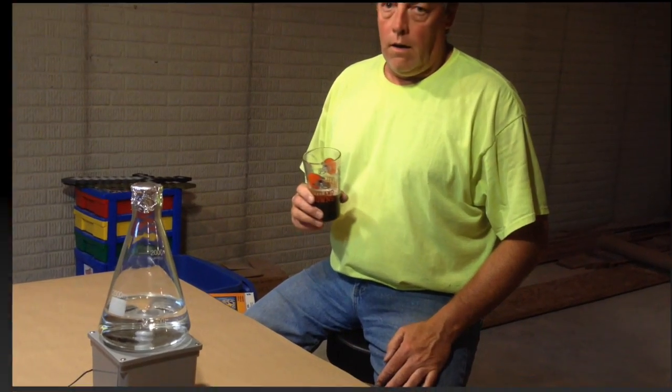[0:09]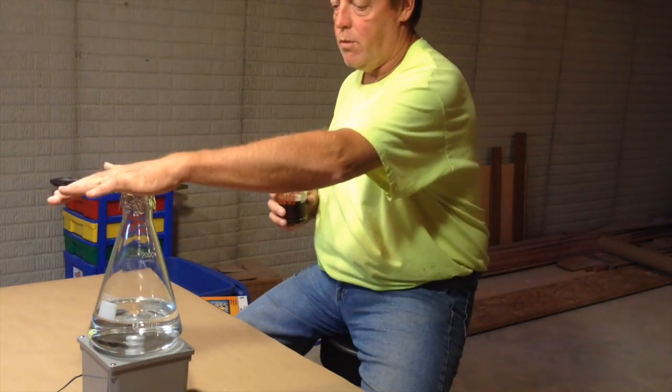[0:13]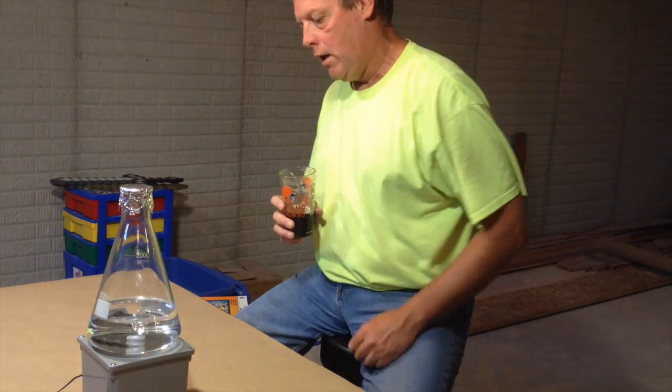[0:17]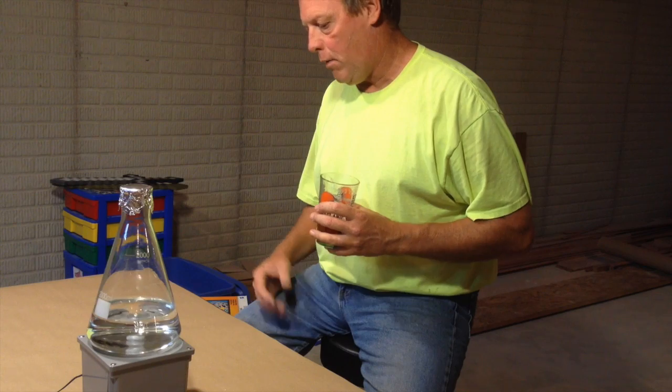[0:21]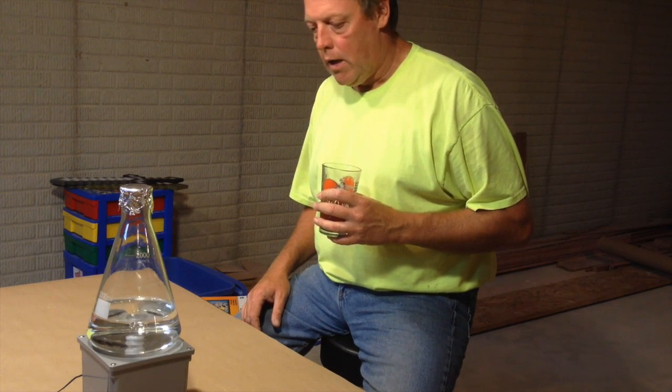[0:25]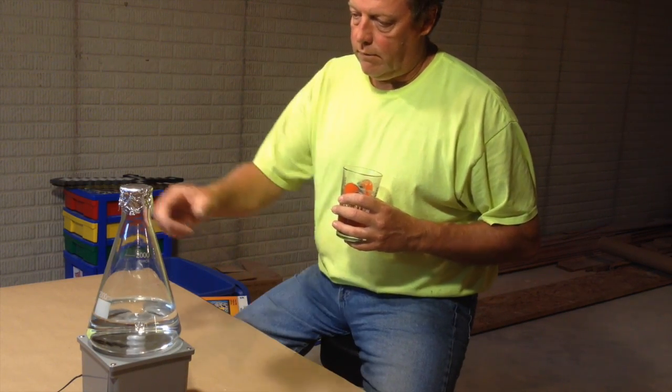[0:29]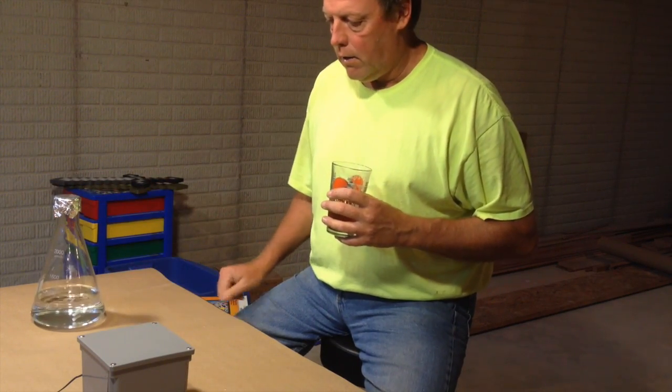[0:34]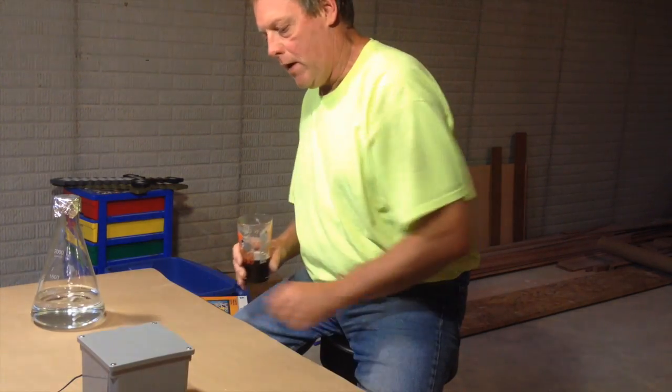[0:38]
Today we're making a stir plate. Took about an hour and a half to make. Parts weren't that expensive. Probably assembled the whole thing for about $20. I'll put a list of supplies down in the comments section, and it wasn't that bad to build.
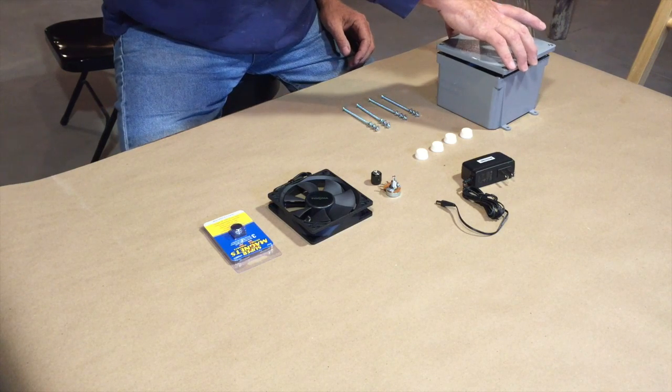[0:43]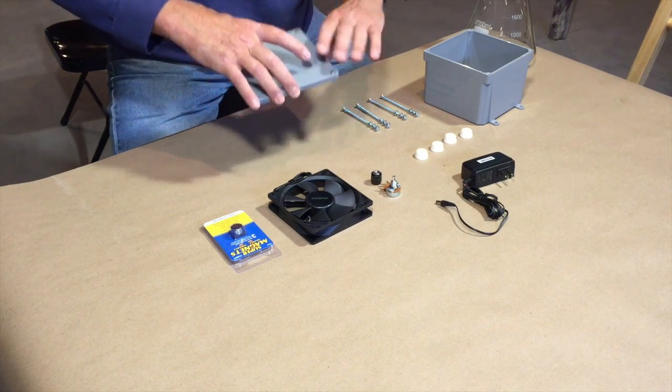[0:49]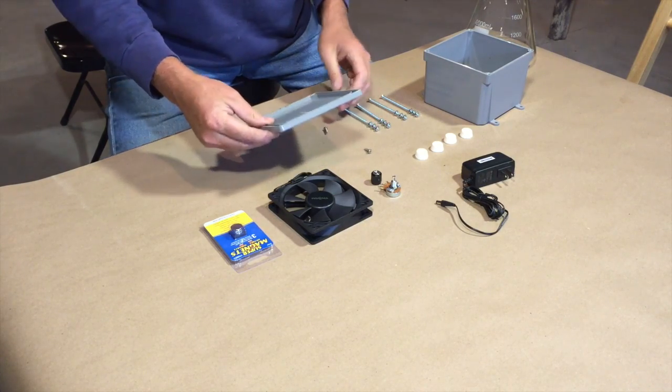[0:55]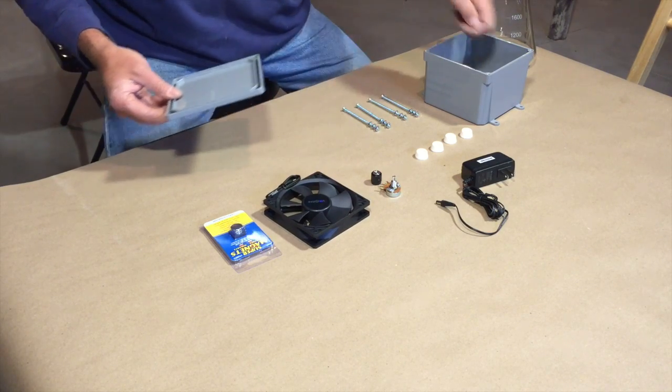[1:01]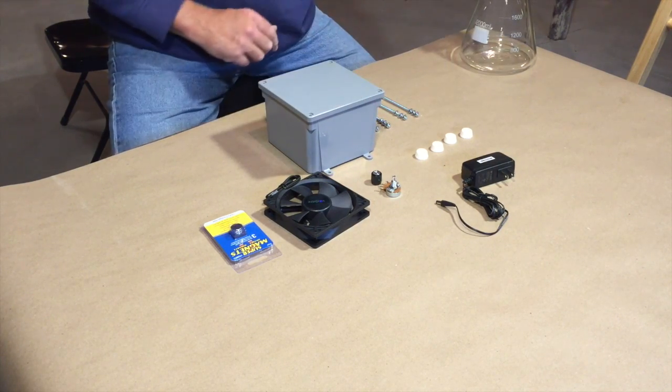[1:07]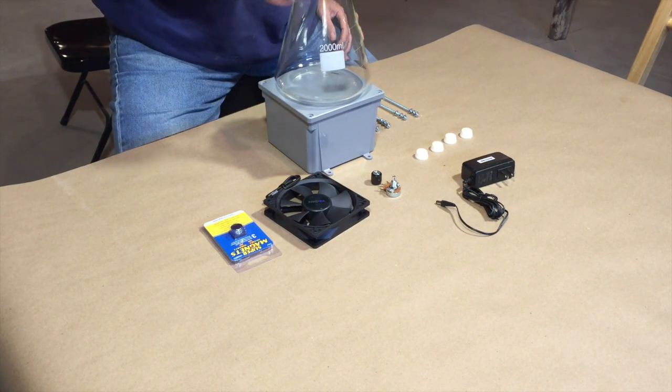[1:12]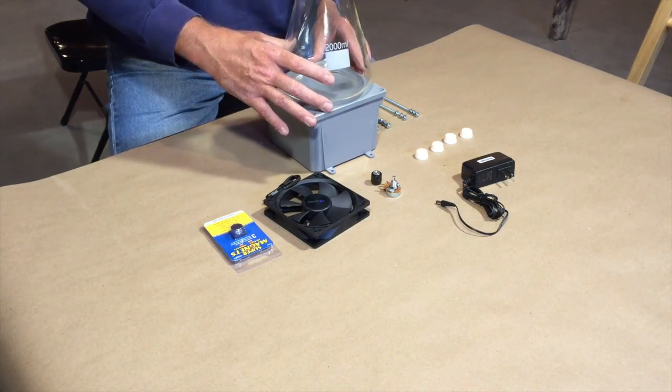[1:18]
So we're starting off building a stir plate. We're going to use a 6x6x4, I believe, workbox. Has screws. It also has a rubber washer inside the lid. Won't need those screws for a while yet. So let's start off with a workbox. It's big enough. I'm using a 2,000 milliliter Erlenmeyer flask. Flask has to sit on the stir plate, of course, and found a box that was 6x6 that fits it just perfectly.
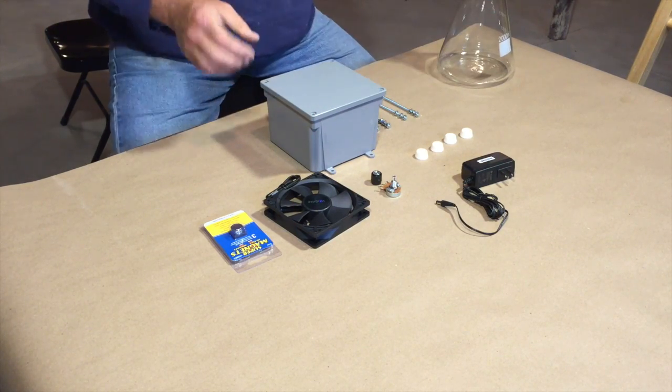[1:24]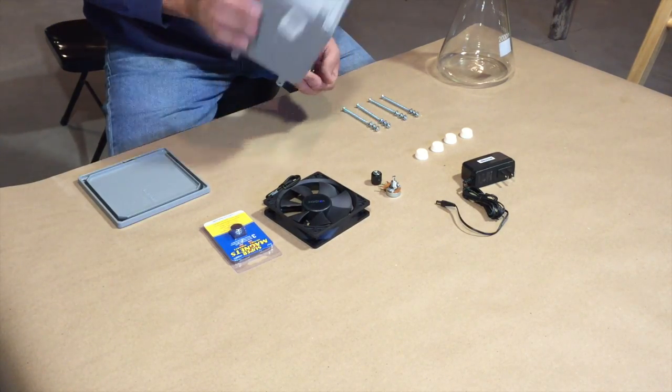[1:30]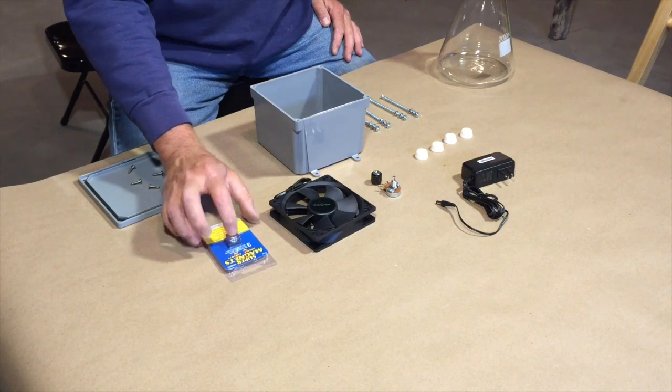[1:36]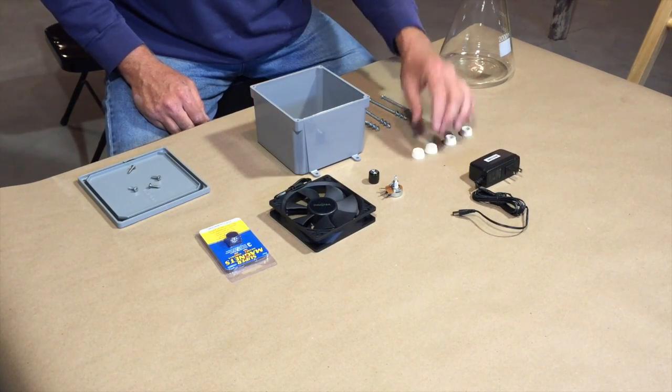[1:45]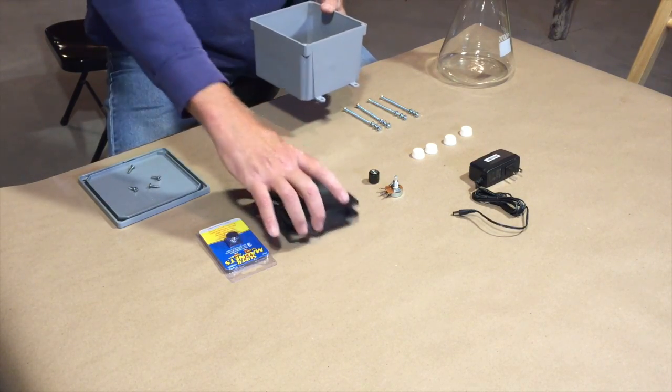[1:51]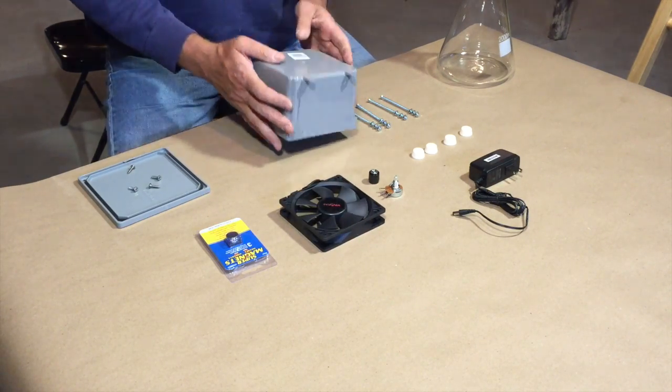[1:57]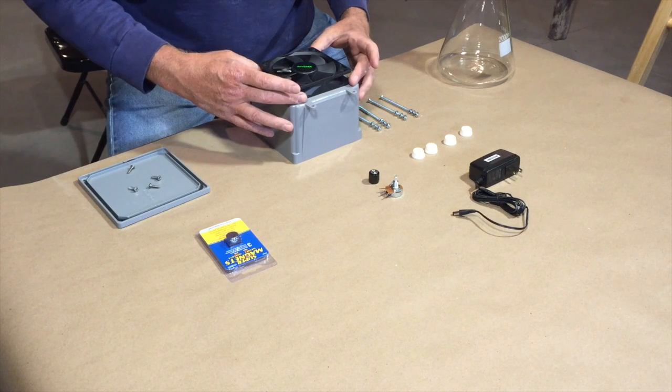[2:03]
So first things first, let's go through some of the components we're going to use. Of course, the main component is a fan. We have some rare earth magnets. We have a rheostat with a knob, 12-volt power supply which will power the fan. We have 4 rubber feet and 4 large screws that we'll put through the bottom of the box that will support the fan inside the enclosure. So just have to drill some holes and get this all situated in here. What we want to do is make sure that we have this centered on the box.
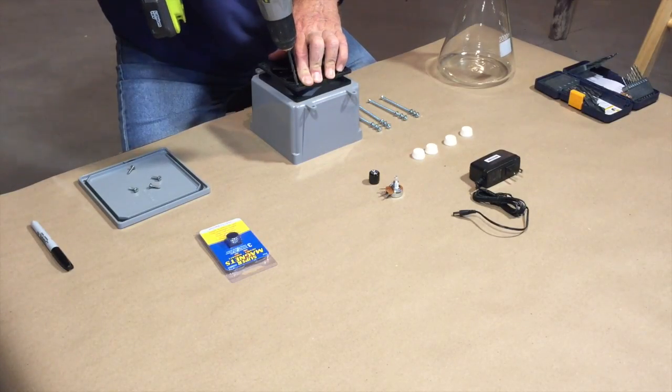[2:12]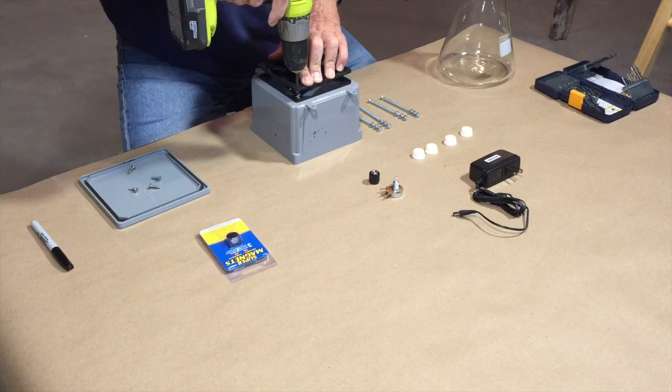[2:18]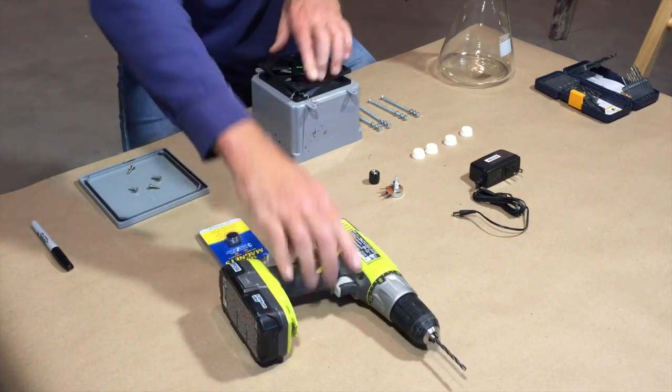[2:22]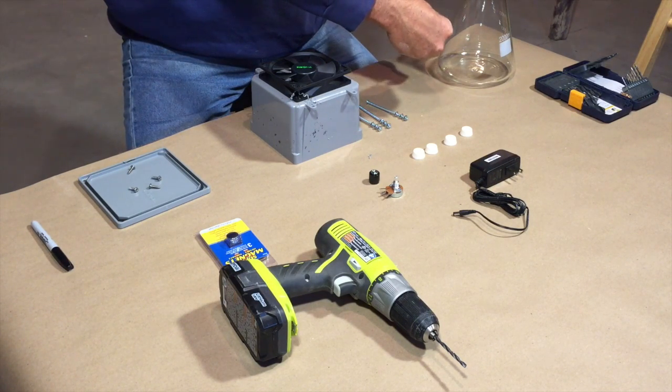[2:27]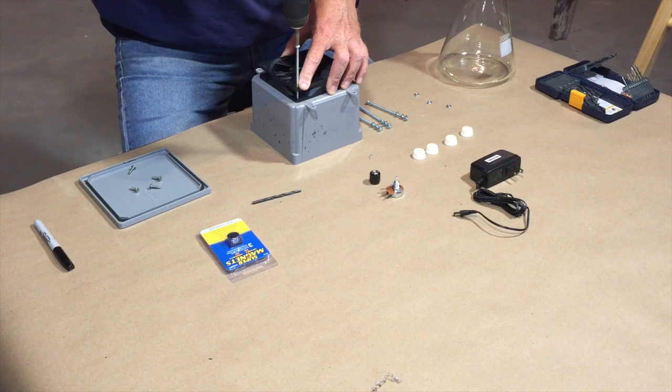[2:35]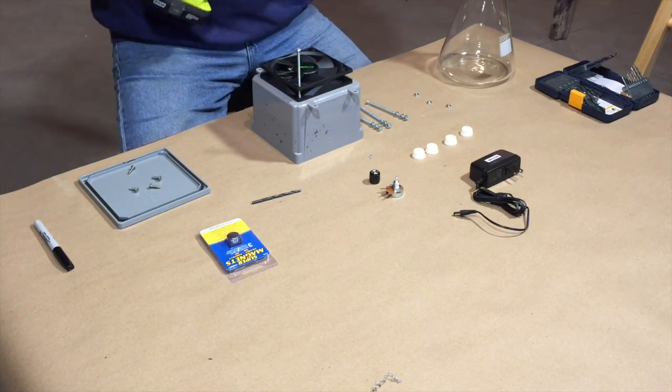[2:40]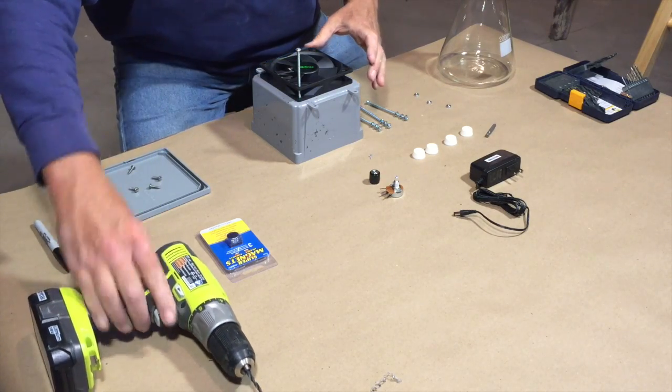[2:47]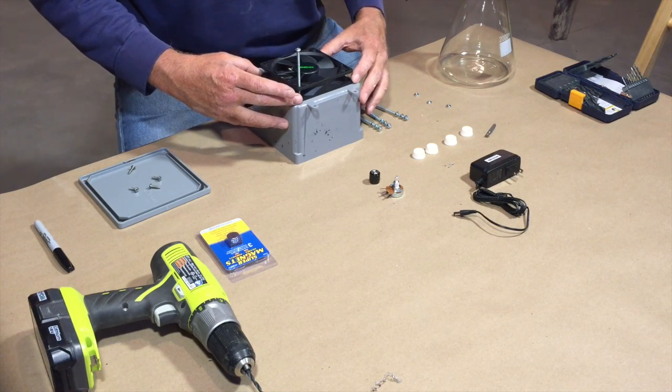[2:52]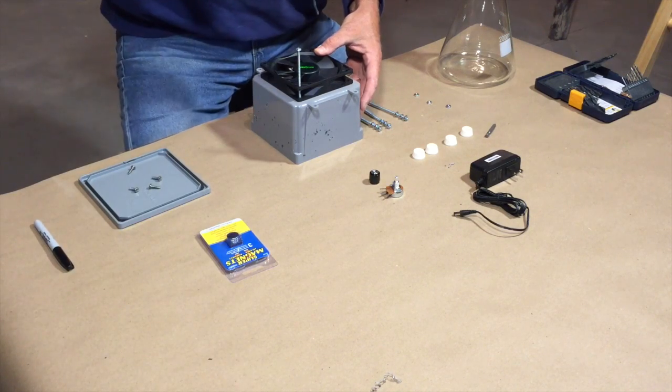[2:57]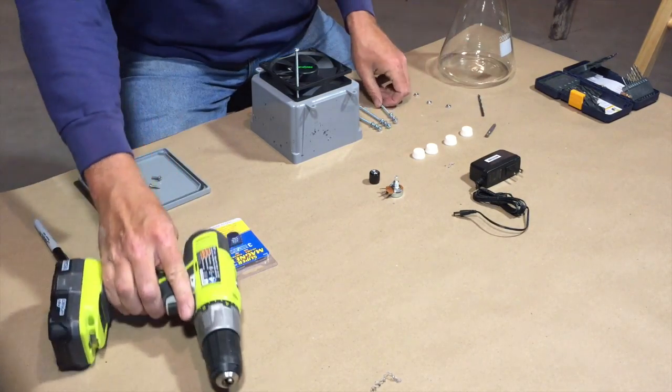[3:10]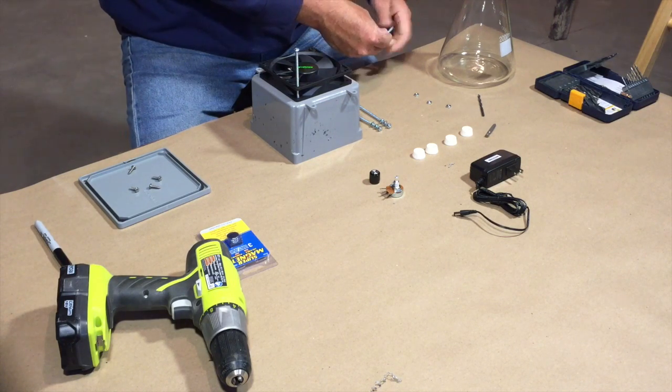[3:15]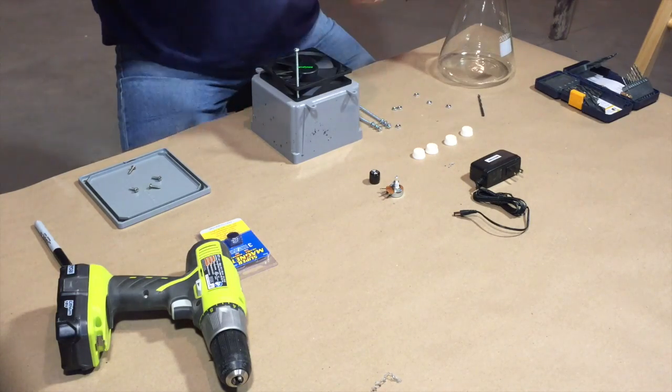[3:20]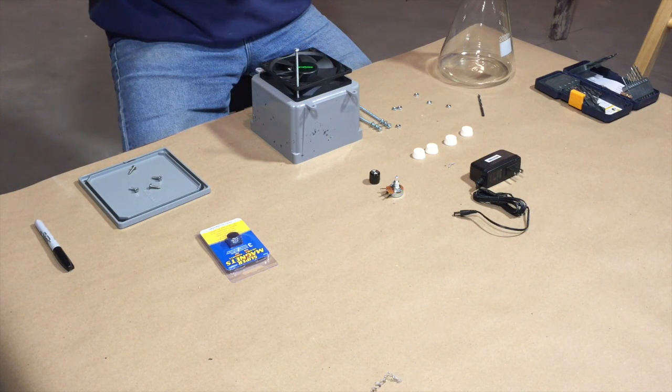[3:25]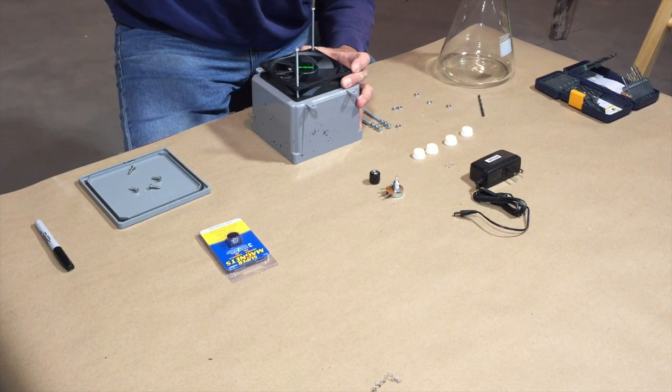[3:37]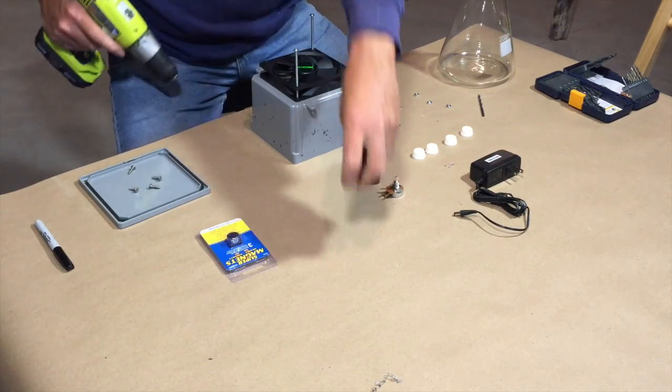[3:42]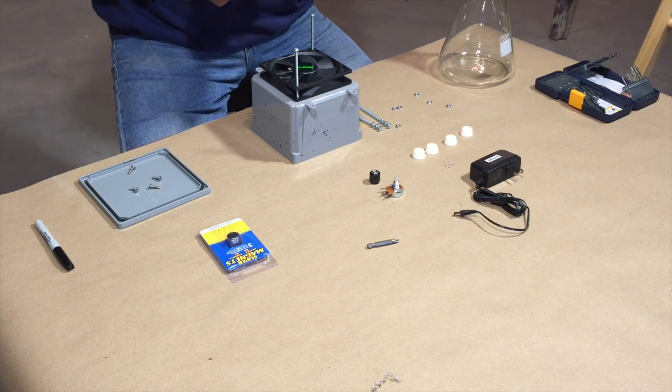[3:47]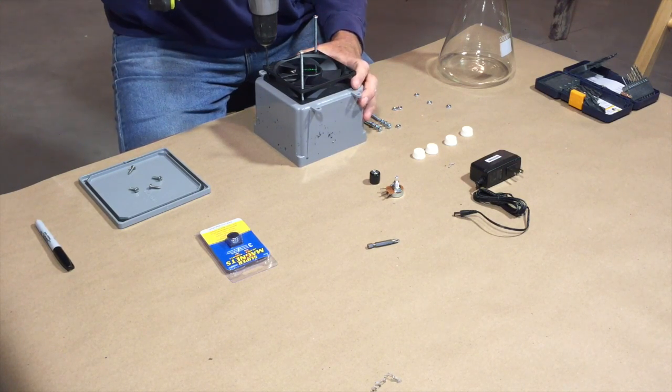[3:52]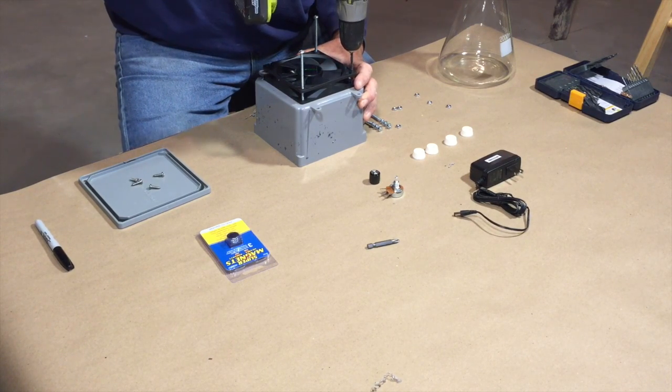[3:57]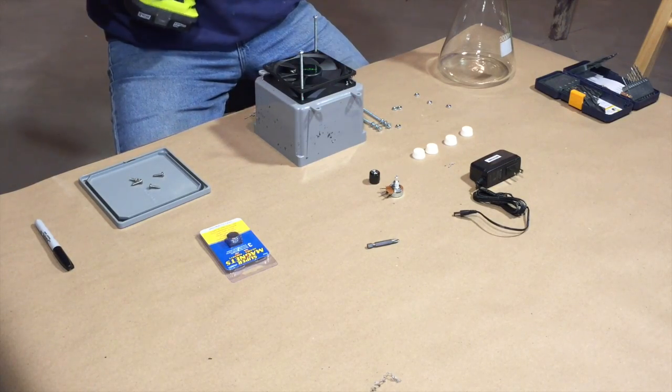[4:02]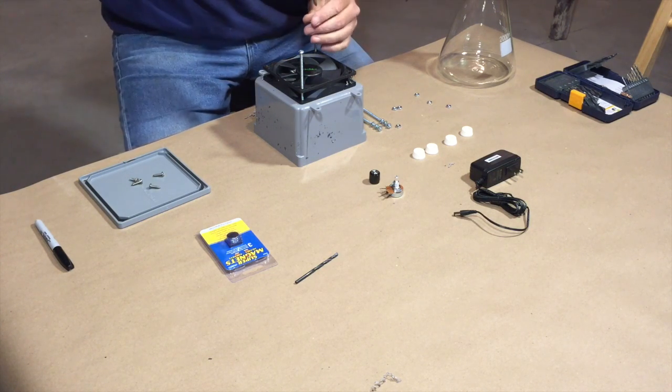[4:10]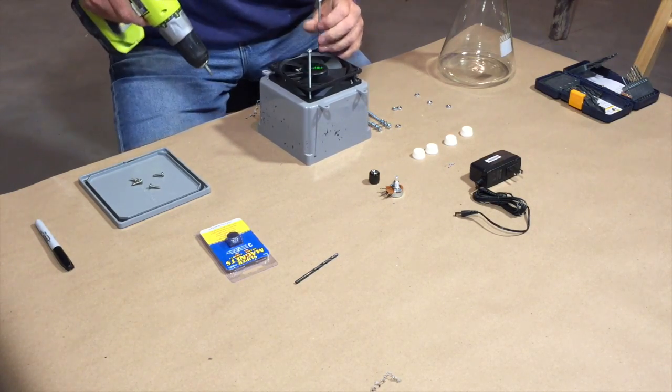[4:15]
Take one of the screws. One last time. Just make sure this is square on the enclosure. And this will make sure that all these screws fit exactly in the right place. Okay, now we can drill our last 2 holes. And that's all we need that for. Screws out.
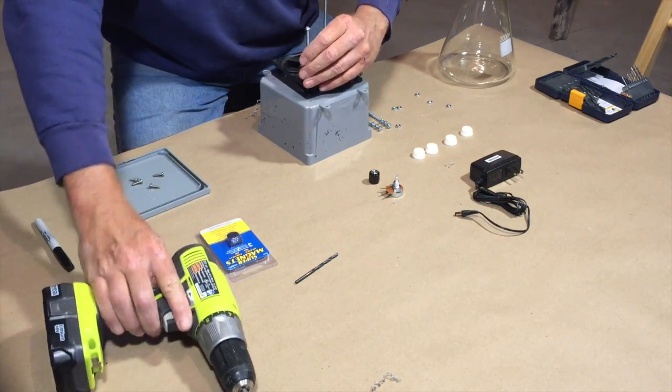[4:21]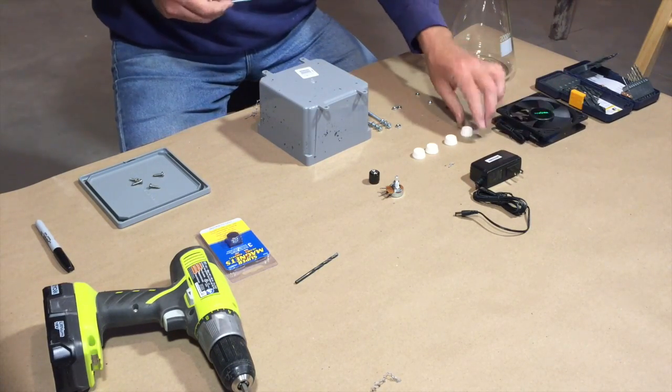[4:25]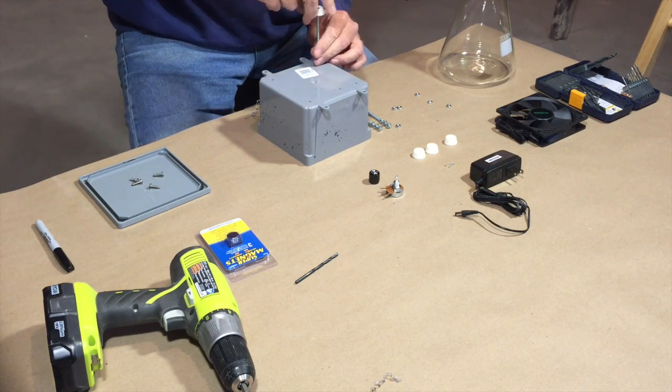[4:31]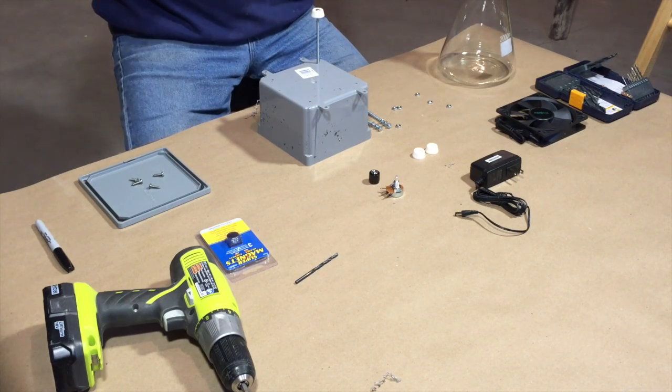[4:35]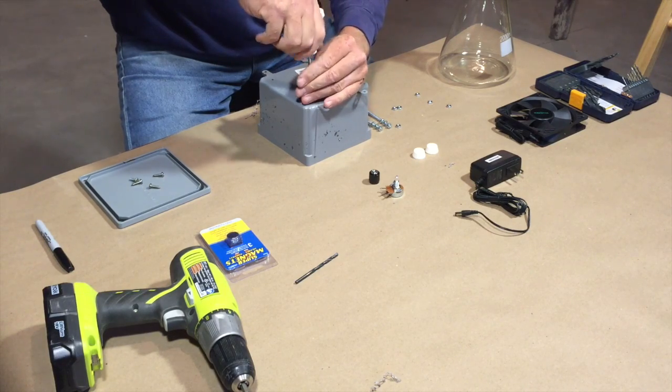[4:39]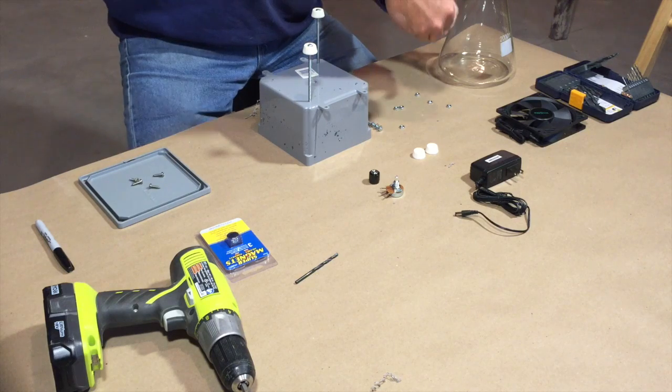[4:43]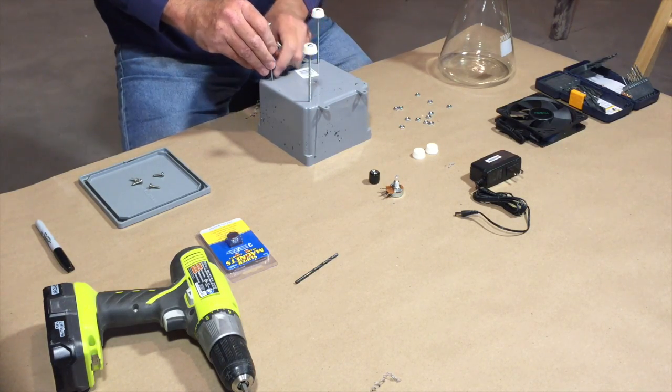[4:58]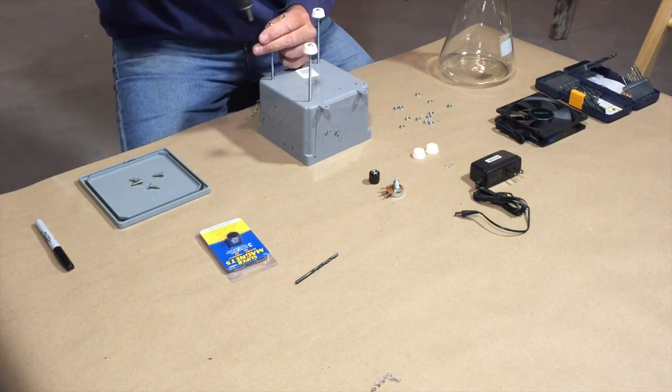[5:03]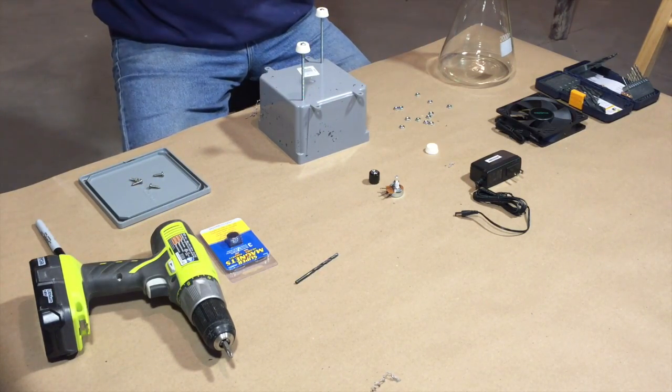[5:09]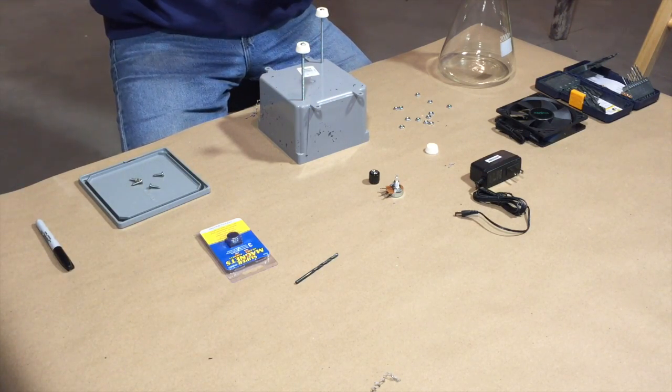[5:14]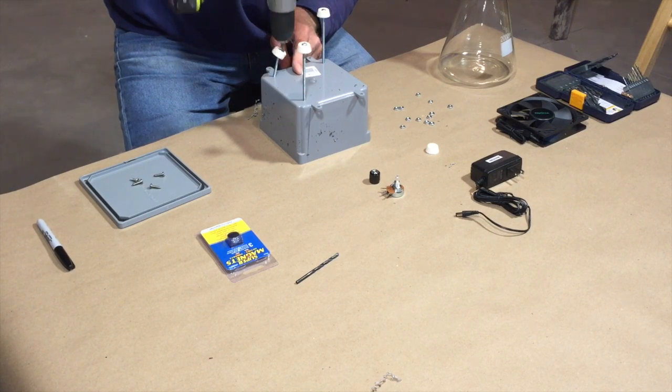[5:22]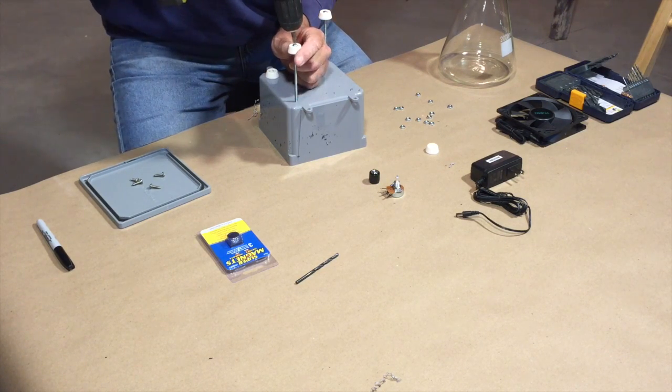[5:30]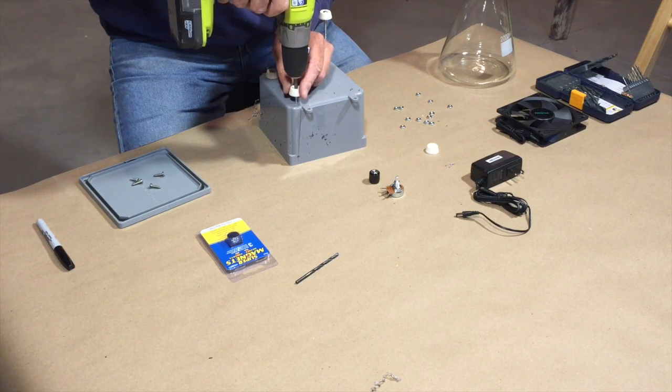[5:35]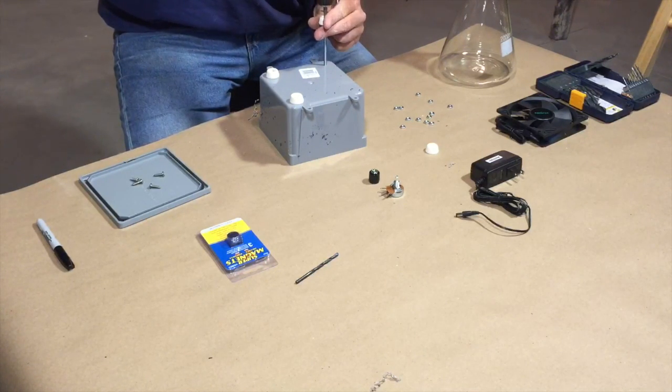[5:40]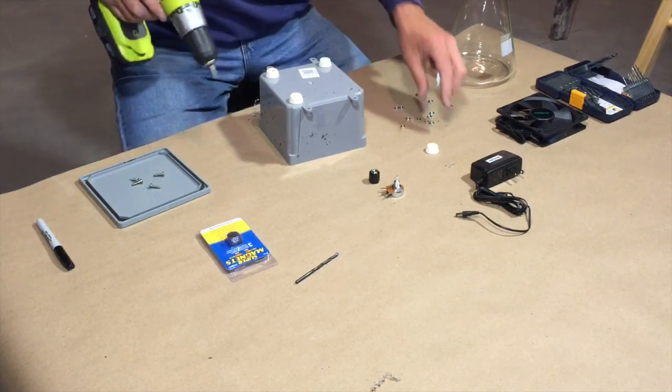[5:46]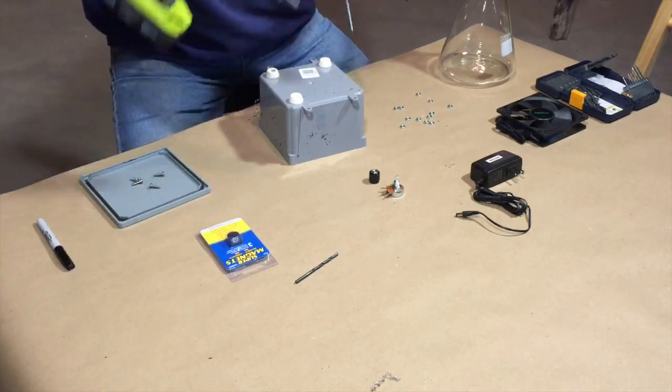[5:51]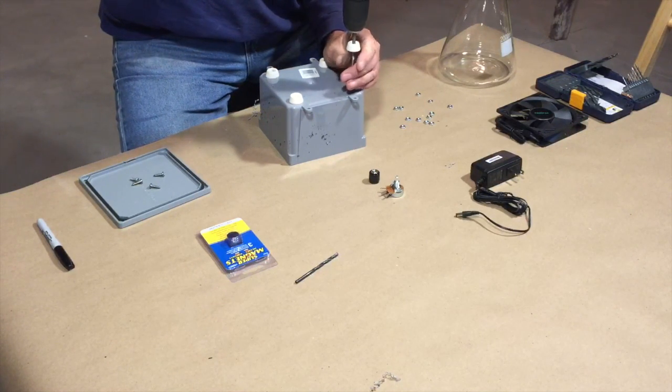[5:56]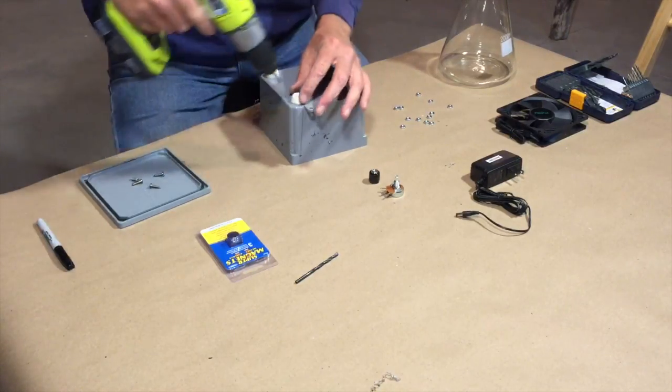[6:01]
And there's 3 nuts on each of these bolts. One to hold the bolt to the bottom of the enclosure and the foot, and then the other 2, and then the one at the top supports the fan and the one on top of the fan then locks the fan to that support nut underneath. Okay, so we'll take these all the way down. Last one. Okay.
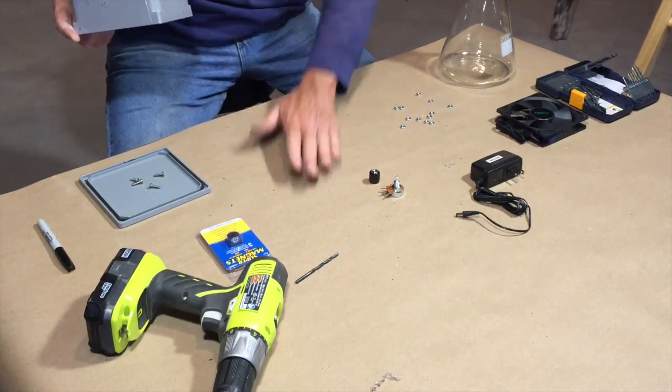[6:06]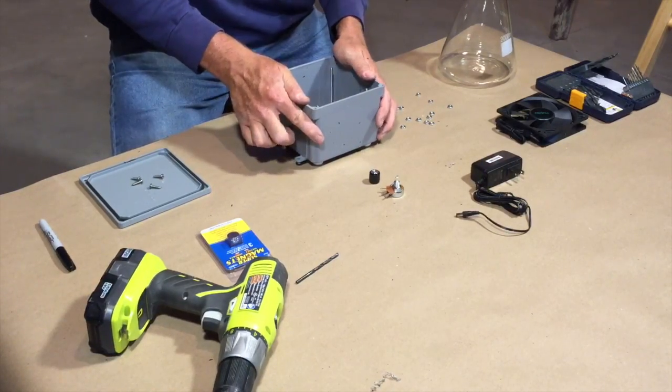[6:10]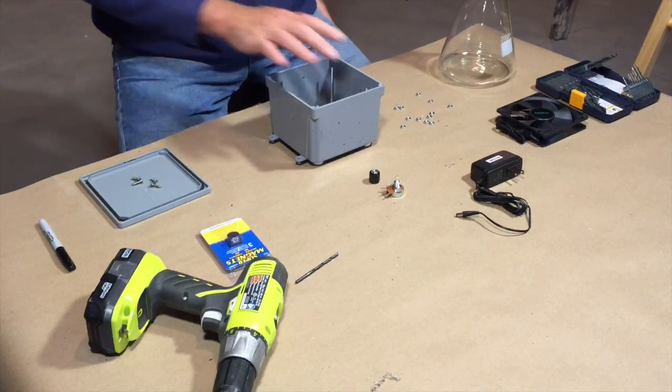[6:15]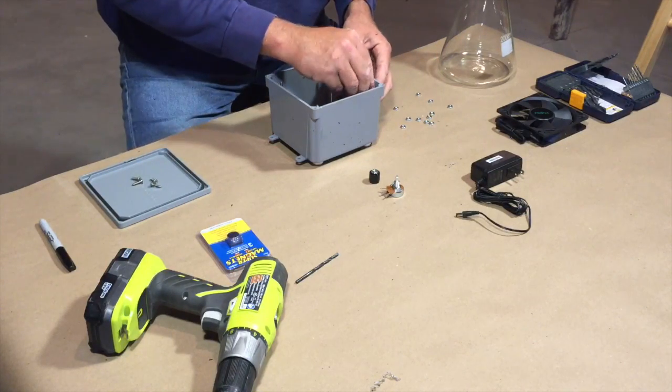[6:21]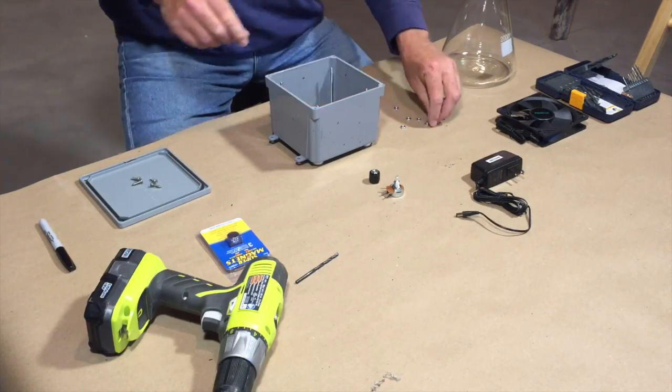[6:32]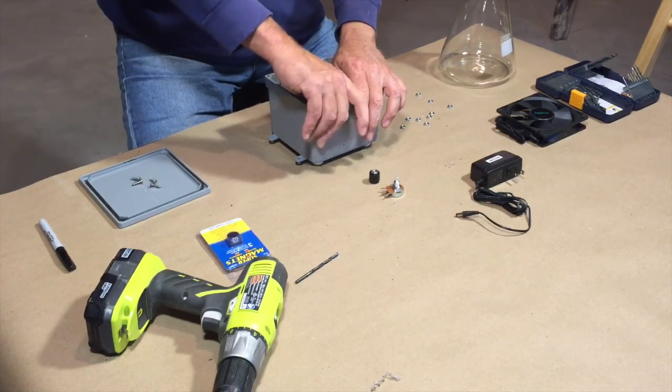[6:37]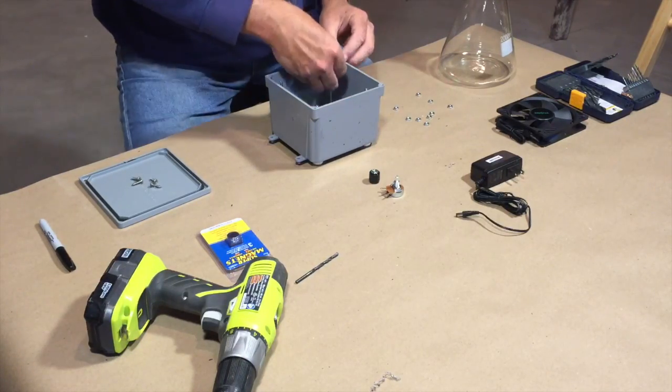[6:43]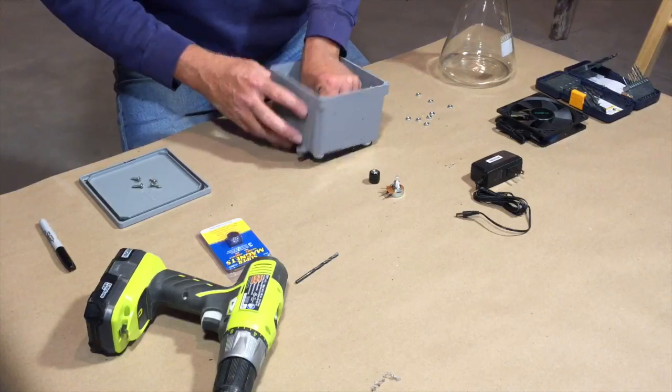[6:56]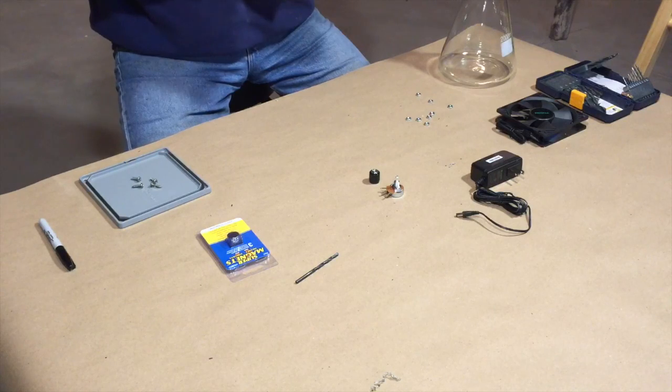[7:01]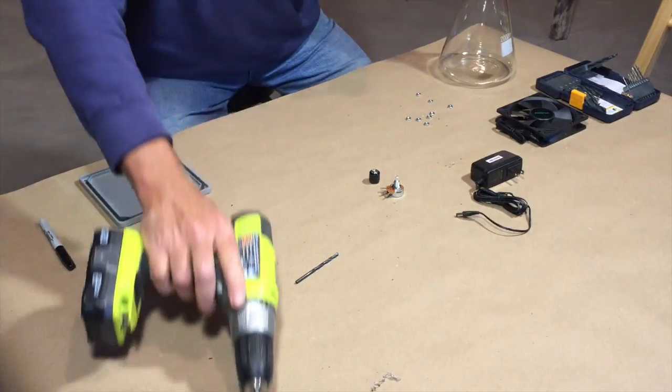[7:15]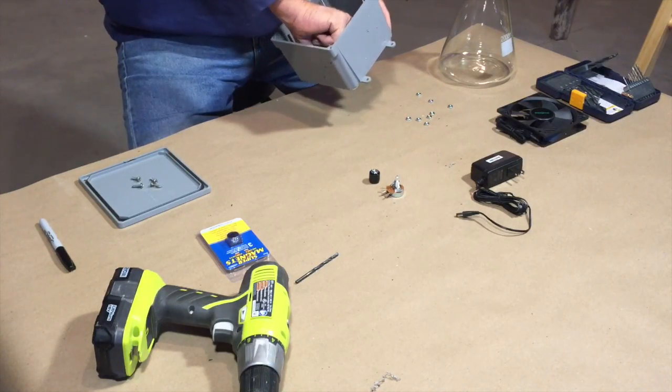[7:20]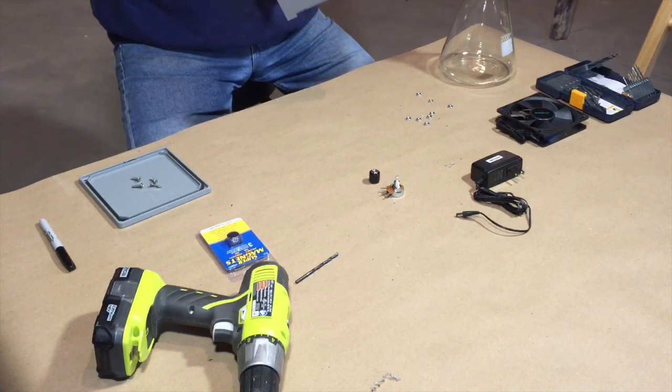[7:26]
Now we have a workbox with feet on there that won't walk across the table when you're running your fan if it's off balance a little bit. So then we take our nuts, put them on top there, we work them all the way down to the bottom of the box. Just want to snug these up. That's that.
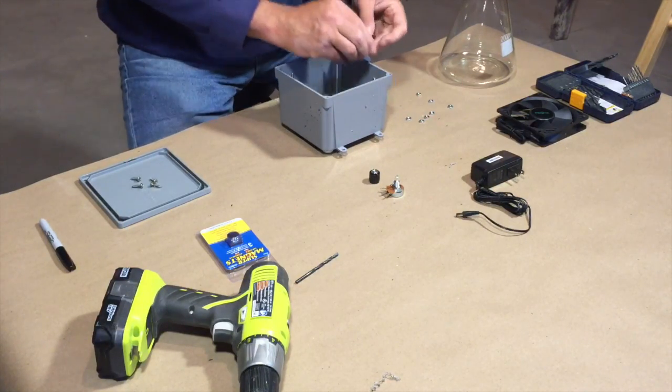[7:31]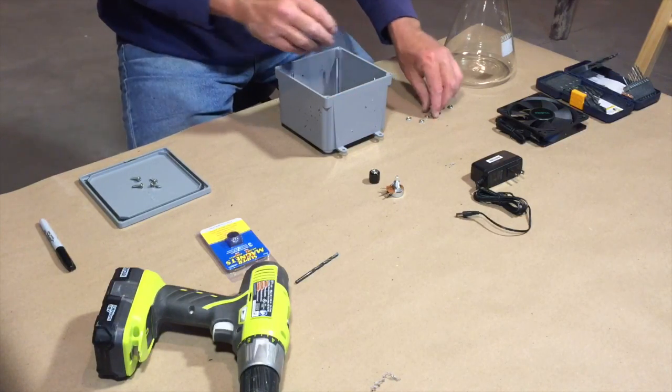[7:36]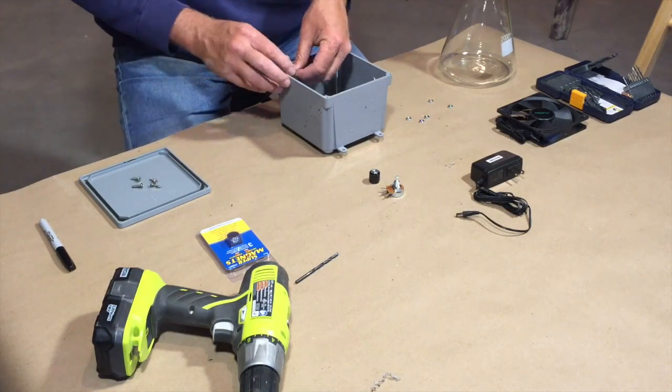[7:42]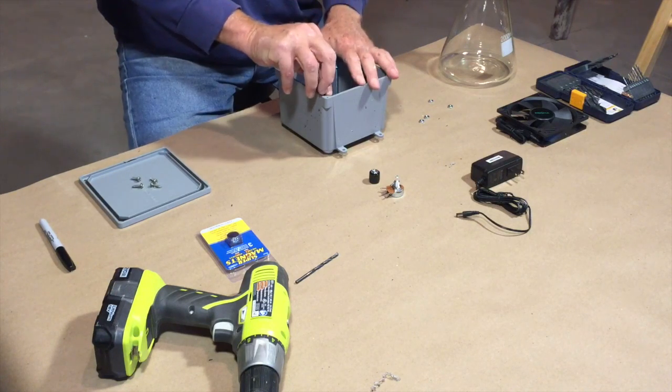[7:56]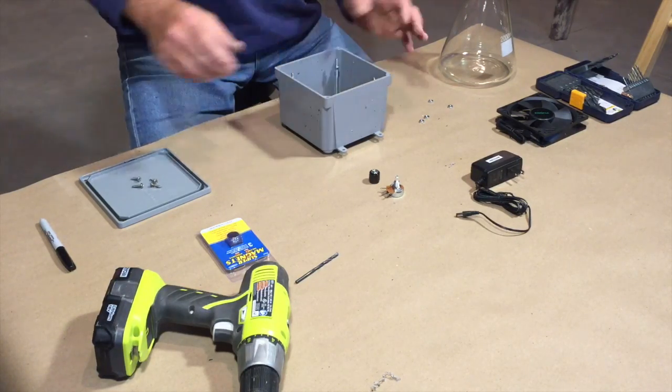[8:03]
Now I get to the tricky part. Sliding these down on here and have them all even, so you have to take that fan in and out quite a few times. And with that being said, I'll probably have to open up the holes on the fan so these screws fit together better. That tight fit is not going to be conducive to this thing going in the box.
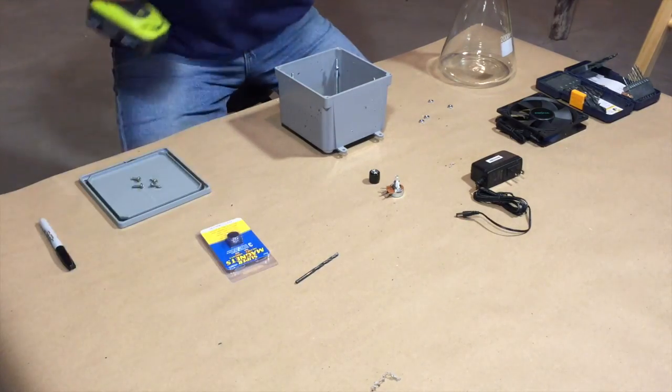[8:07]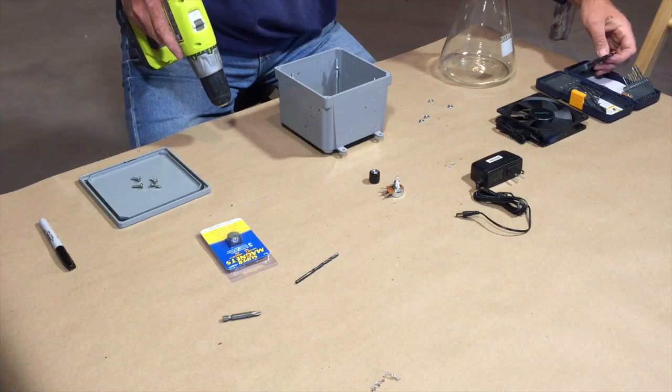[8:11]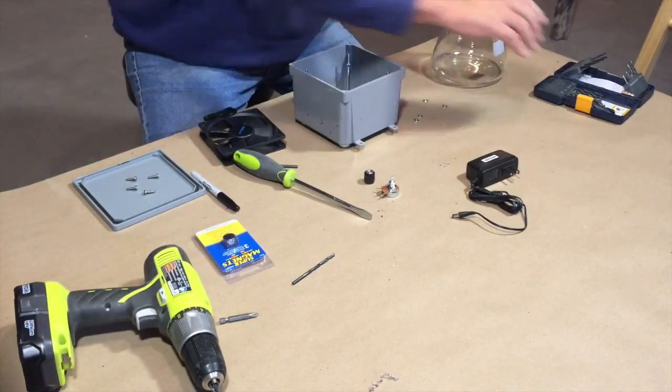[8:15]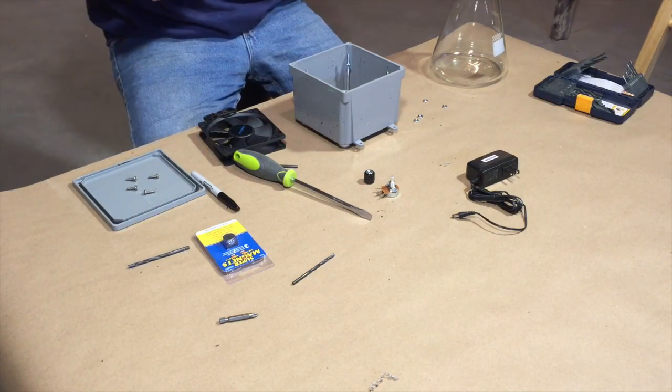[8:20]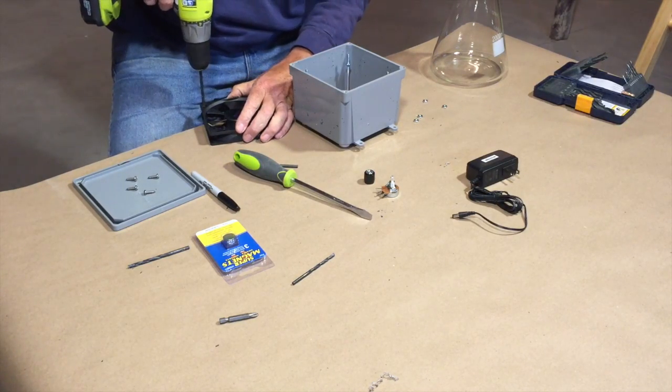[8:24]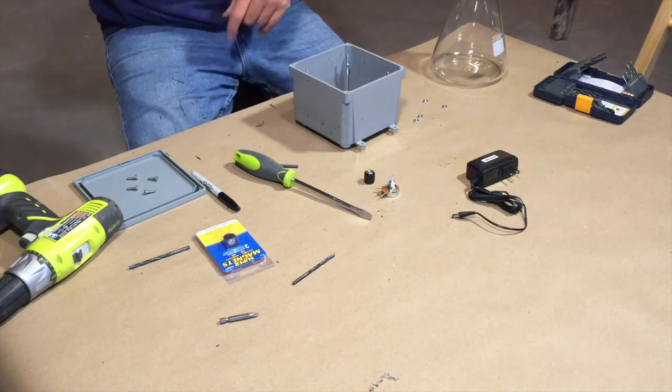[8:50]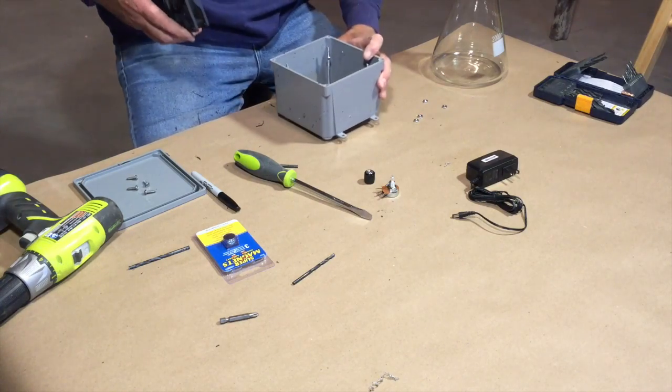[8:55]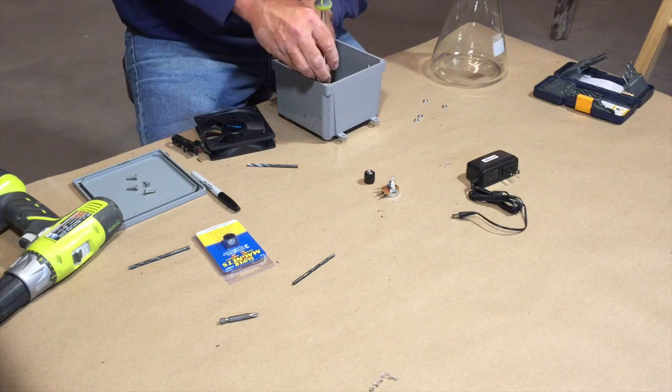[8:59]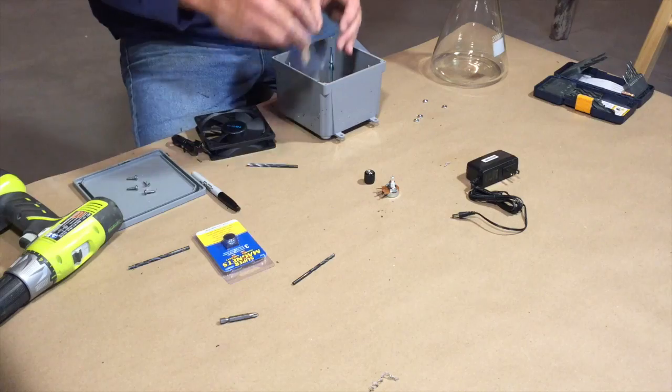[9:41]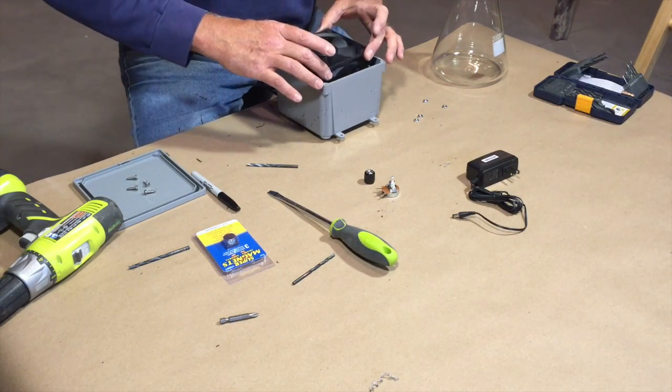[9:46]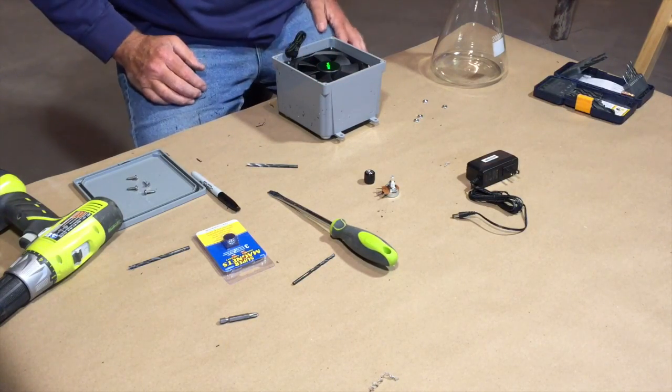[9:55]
Okay, rule number one, always use a bigger drill than you think. That way you don't get stuck on the studs. There's no way that won't get stuck on the studs now. So what we'll do is we'll measure this, measure that. Now I'll take the fan, put it down on top of there, and that looks pretty good.
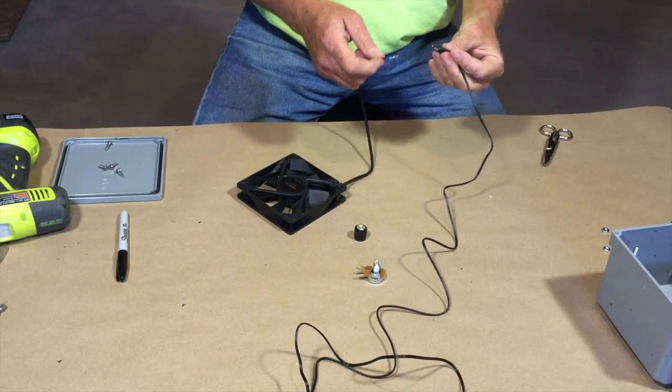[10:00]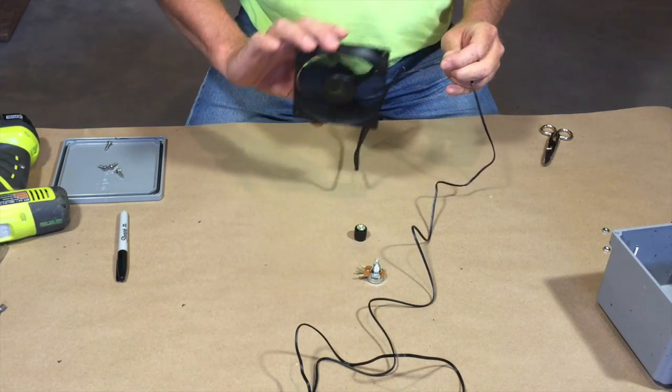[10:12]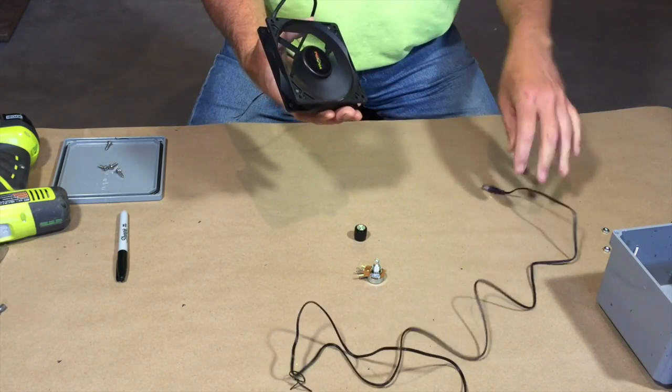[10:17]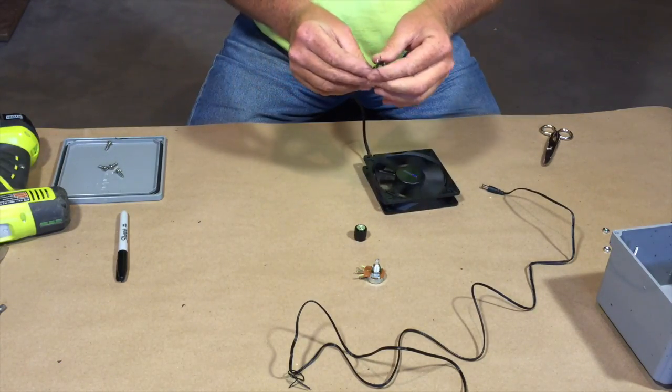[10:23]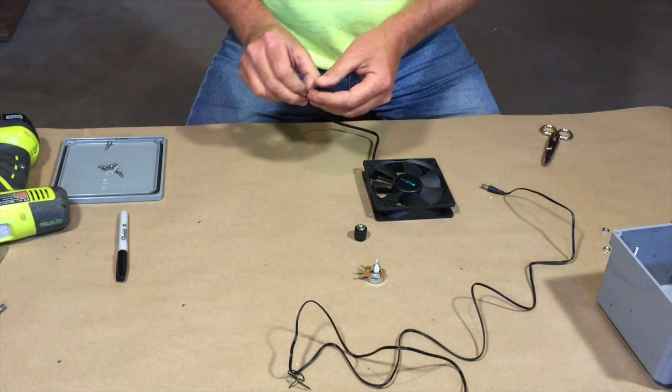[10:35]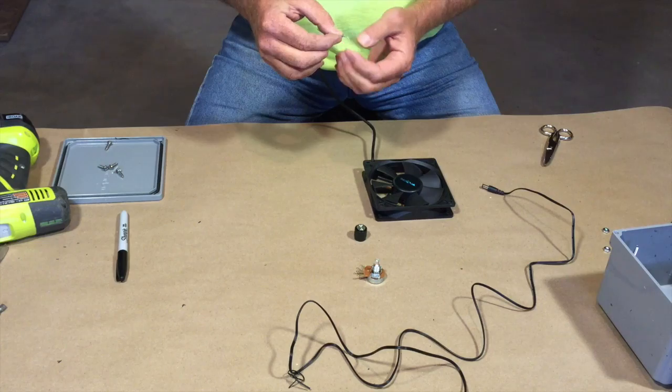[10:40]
So now we're going to test the wiring on the fan before we wire everything up. And I looked up the wiring schematic online, and sure enough, they are spinning. So know what the correct positive and negative situation on this is. There's 4 wires on this. The other 2 wires I just fold over and stuck back inside the insulation casing. And we'll wire this through the rheostat. Just make sure everything is good before we start getting everything finalized.
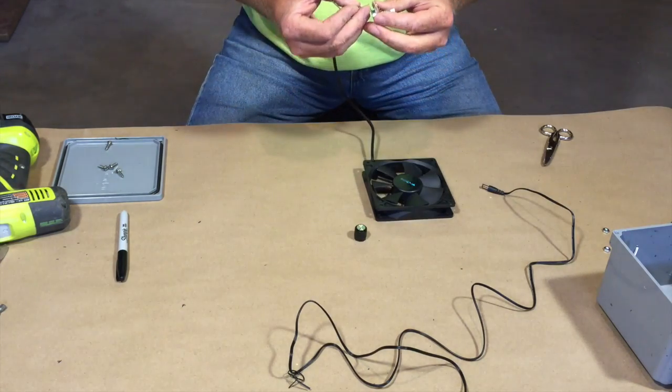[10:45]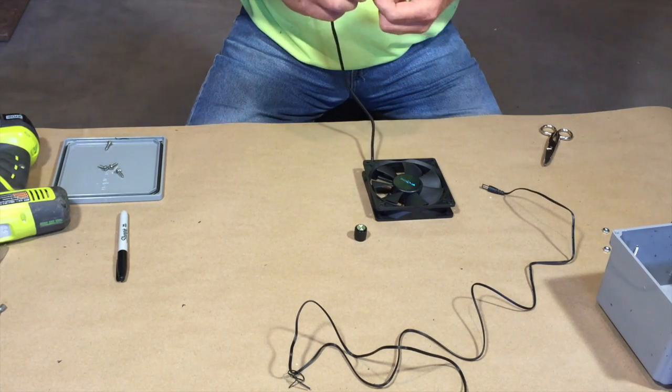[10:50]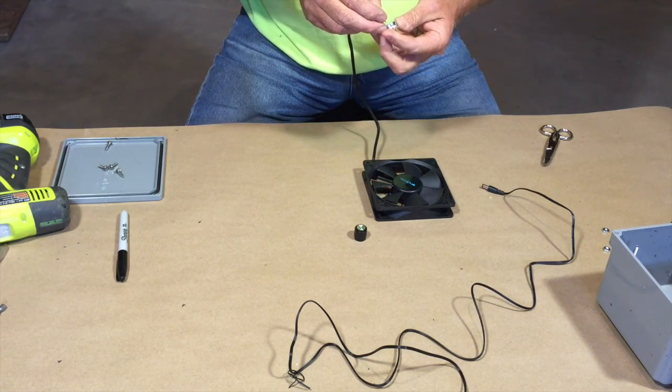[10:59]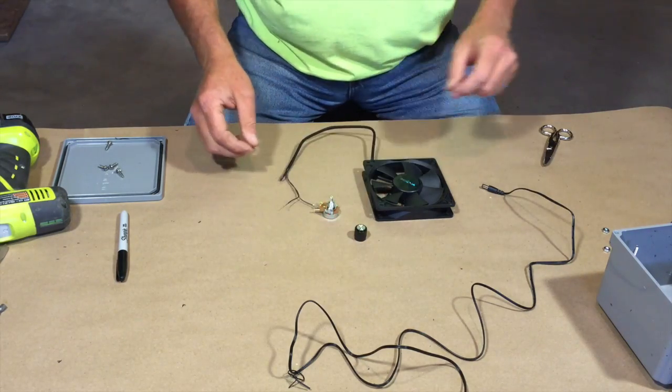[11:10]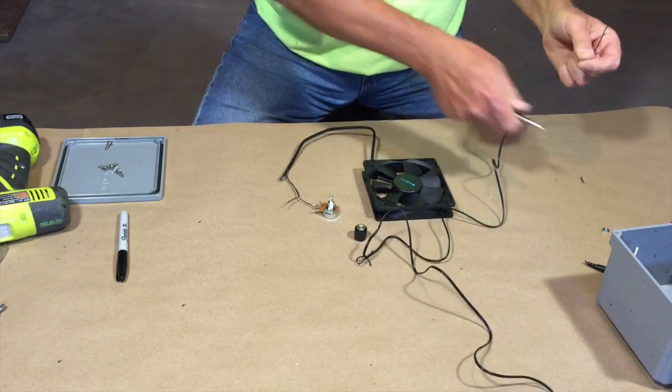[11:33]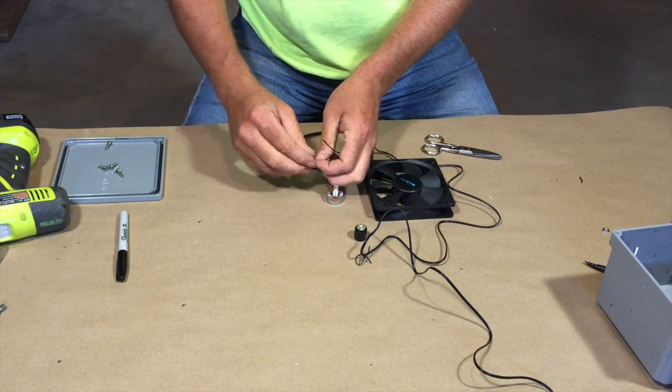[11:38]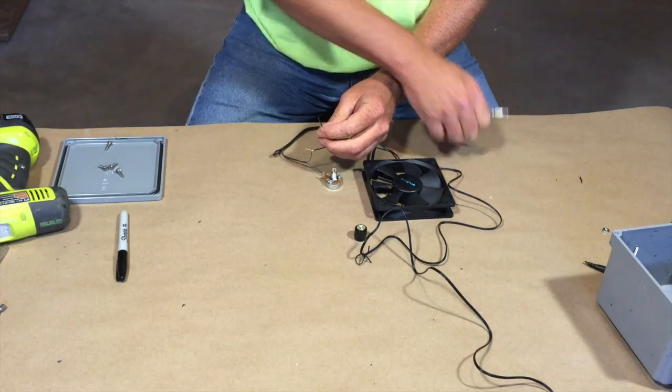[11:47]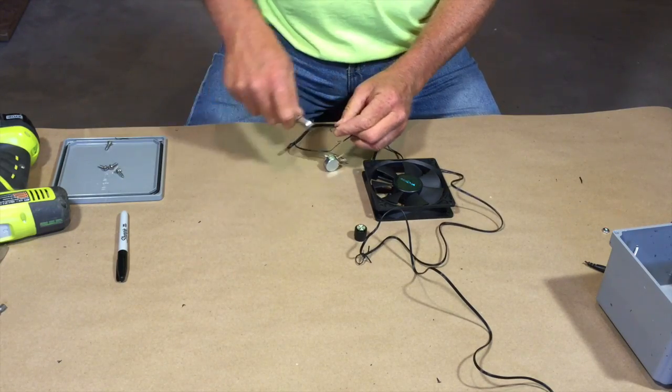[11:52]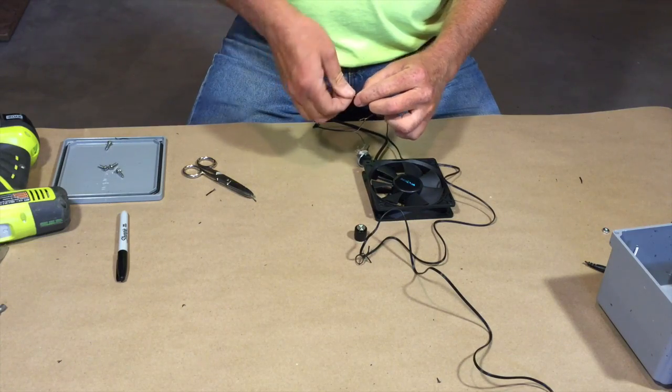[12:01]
I believe the center one is that one. It's going to be the power to the fan. The power positive on this one should be the one with the straight line on it. Do it quickly. It's still plugged in. So then we'll take the negative, connect to the negative. And the positive, just lightly grab it with the scissors. Either going to be that one or it's going to be that one. That one works. That one works. So let's stick that through there and twist it.
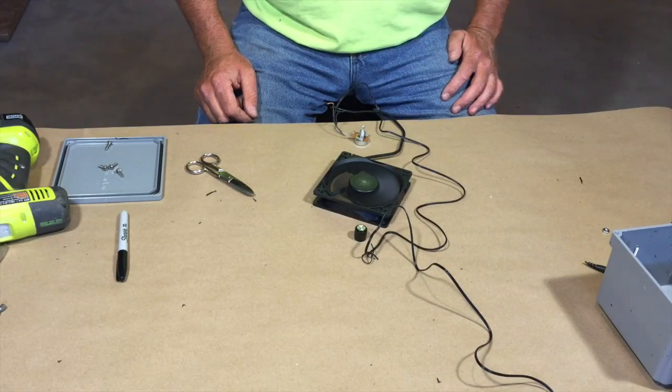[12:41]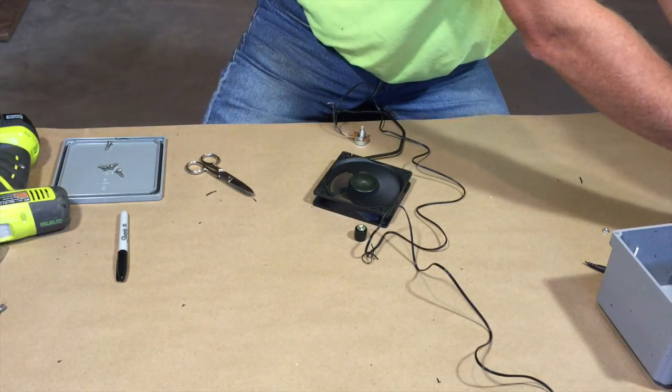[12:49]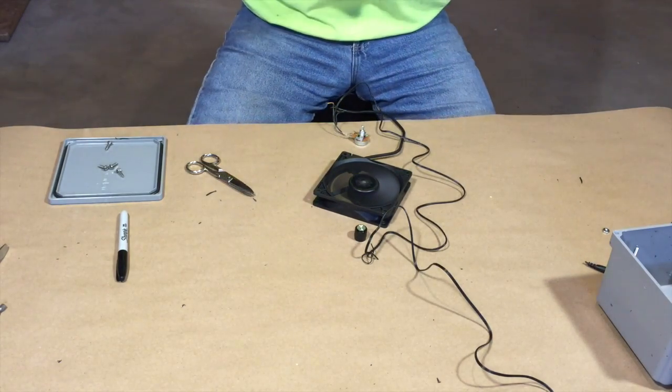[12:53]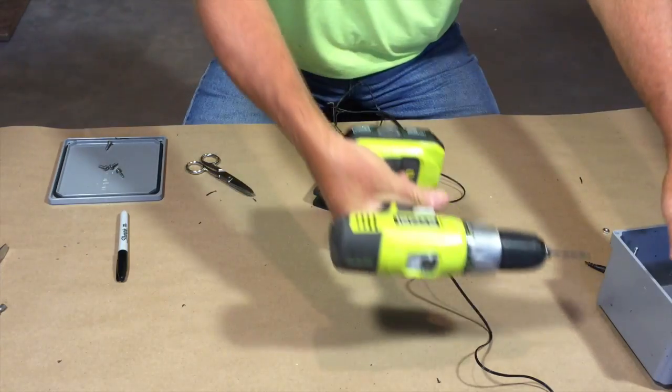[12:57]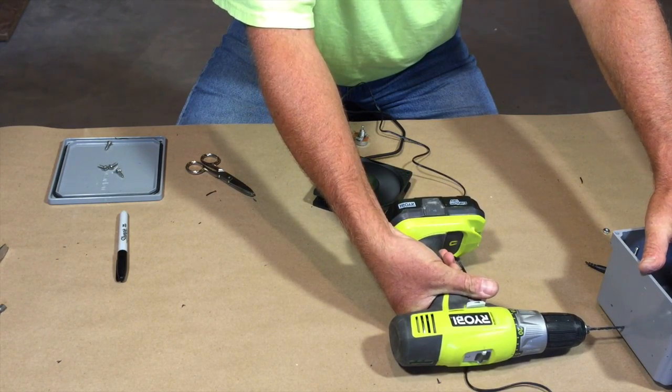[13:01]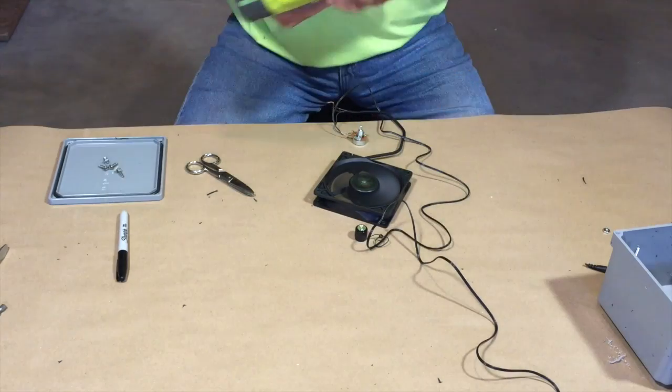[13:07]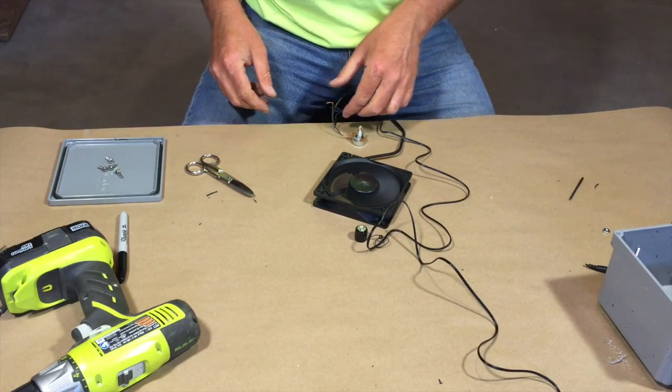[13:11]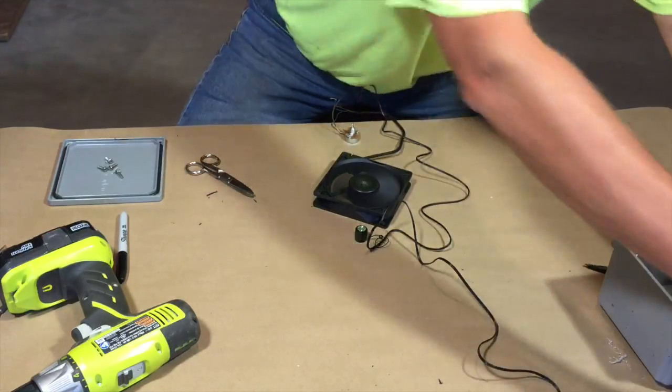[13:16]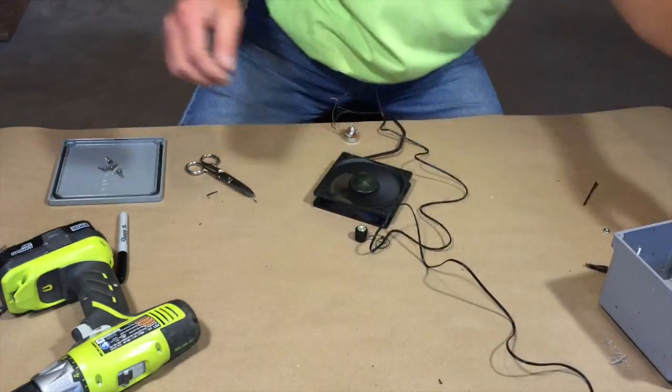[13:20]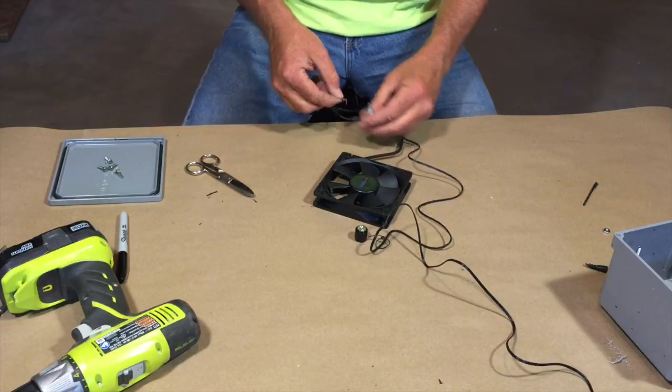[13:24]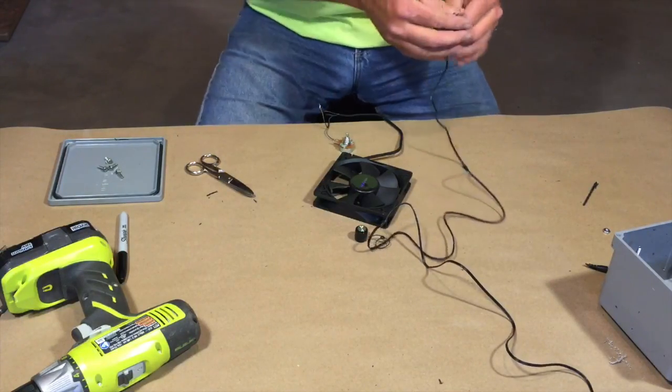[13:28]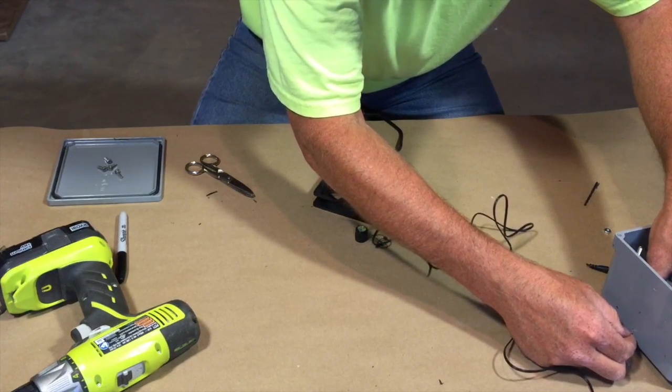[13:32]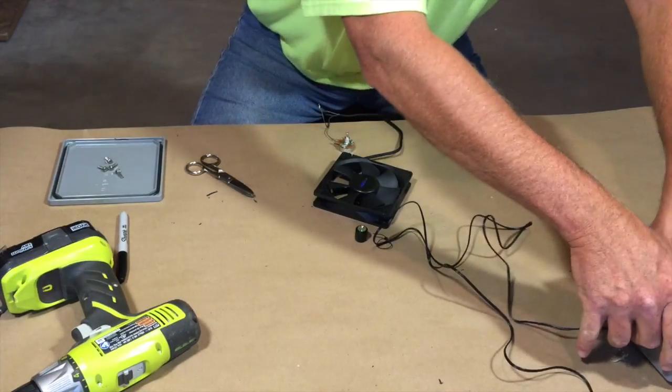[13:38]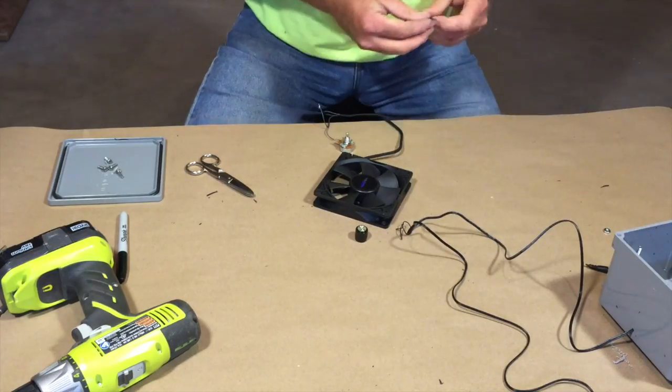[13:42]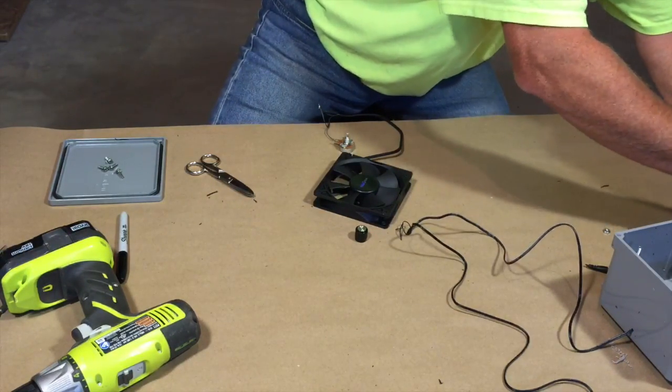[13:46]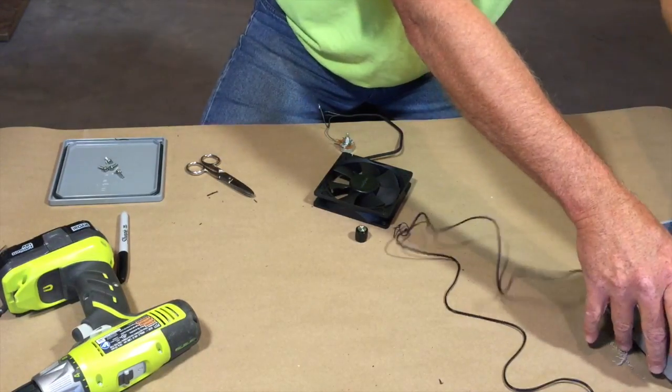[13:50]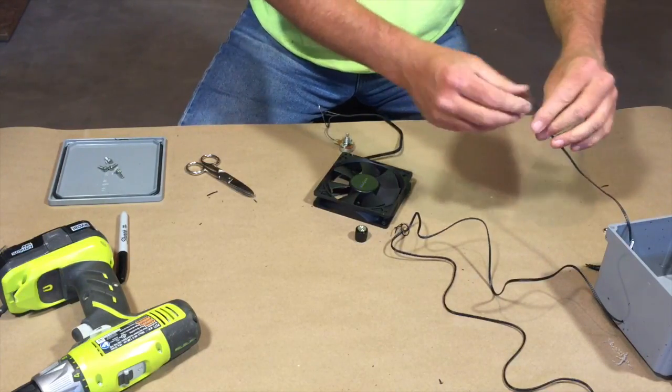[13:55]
Now keep in mind, this is just temporary wiring. We're going to solder all this. So we're going to have to drill a small hole into the case to accept the wire. Which should probably be about like so. Take it in the bottom. And we'll unplug the power transformer. And that hole I drilled was a 1/8 inch, accepted that wire real nice and tight. I'll probably put some silicone sealer on that afterwards.
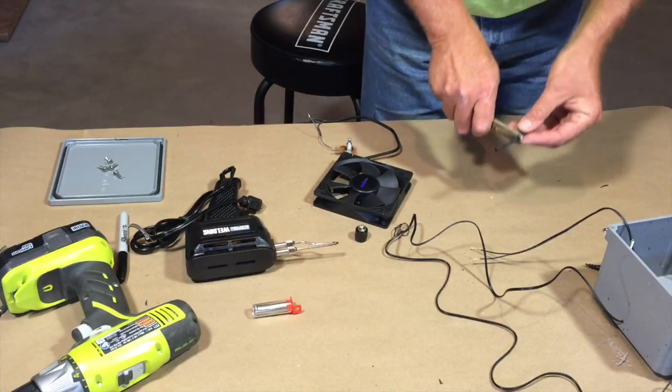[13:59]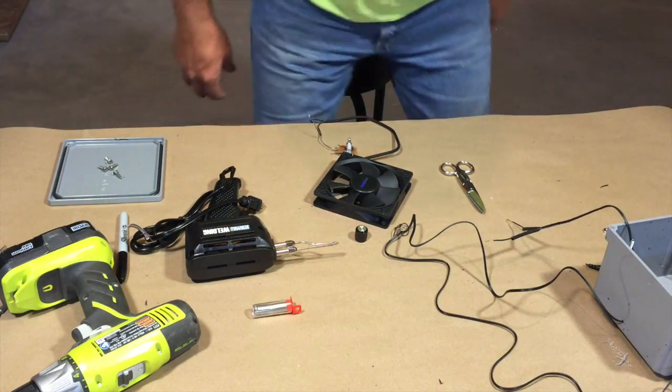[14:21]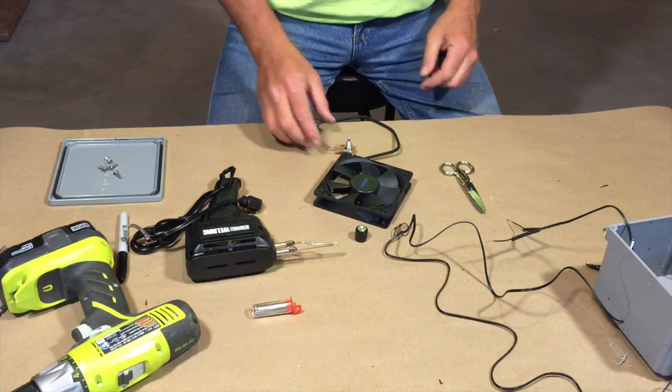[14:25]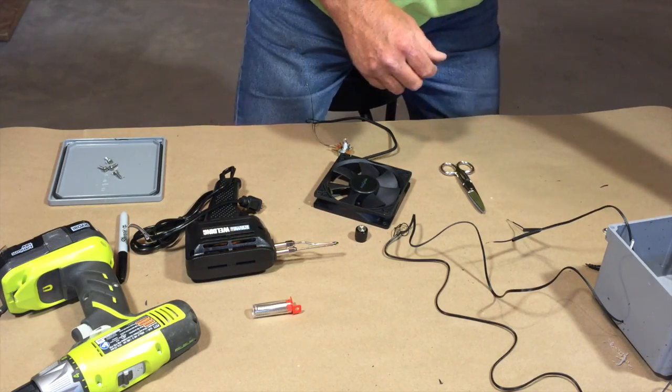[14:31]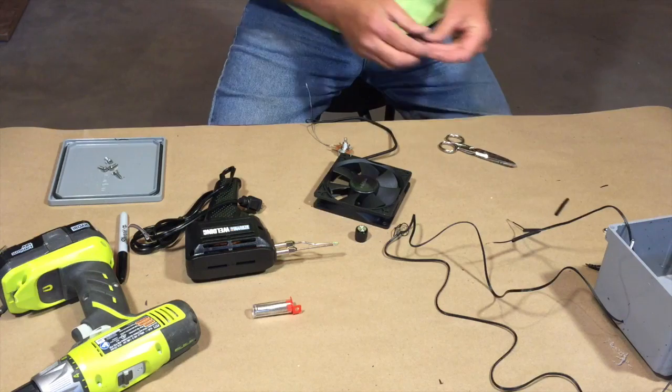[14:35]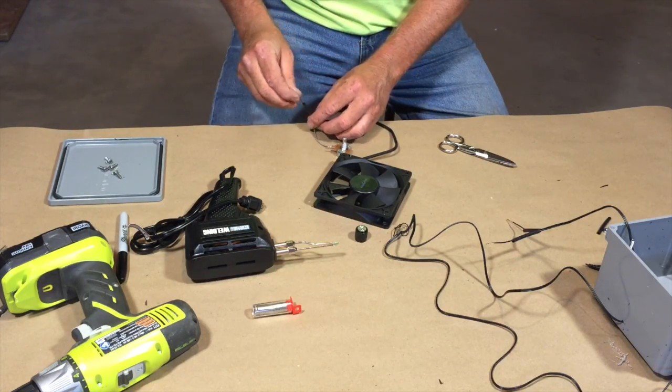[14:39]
Some heat shrink. Put one on each side. Okay. Like I said, we'll run heat shrink on all this. I'm actually going to use the thinner stuff on that also. We'll take that, put it on there. Always put your heat shrink on first, otherwise you'll forget. Then you'll have to unsolder it.
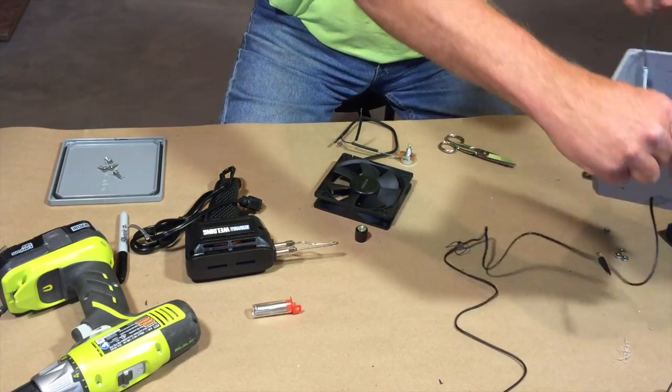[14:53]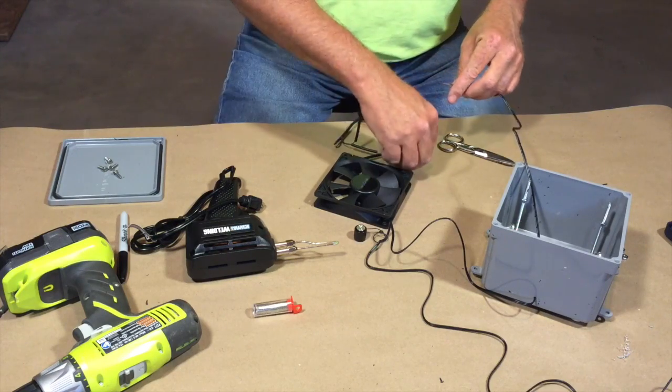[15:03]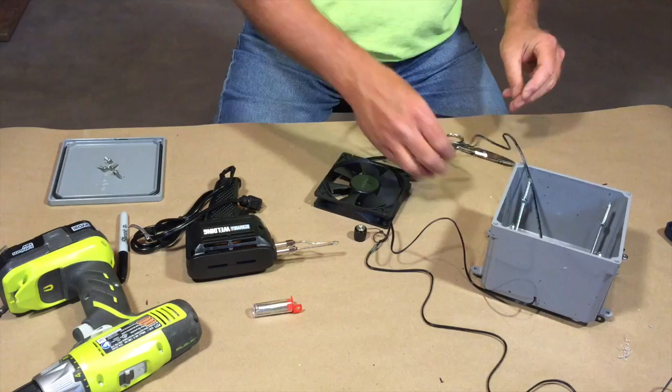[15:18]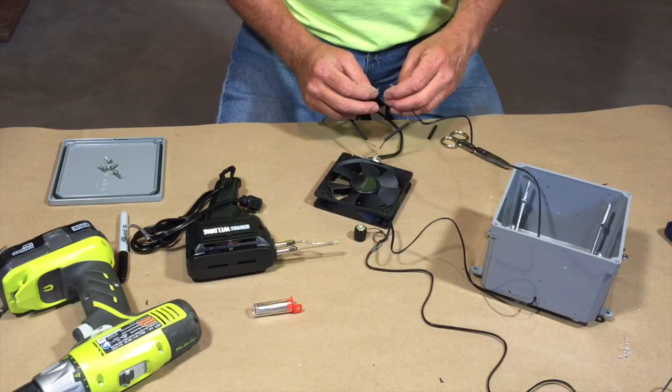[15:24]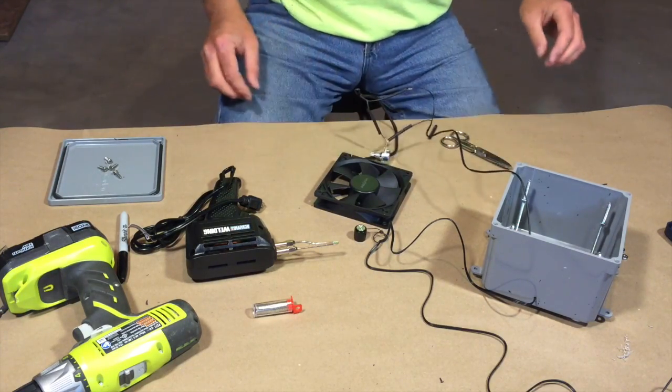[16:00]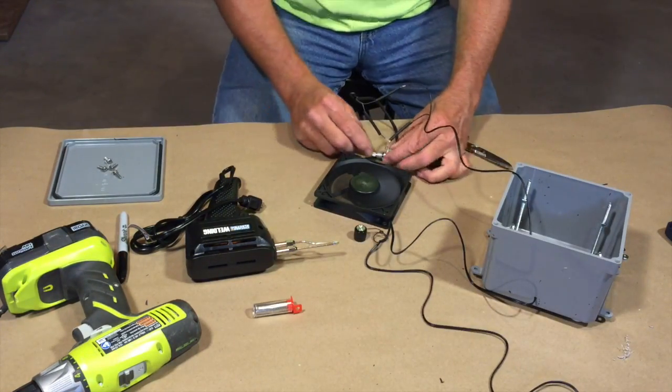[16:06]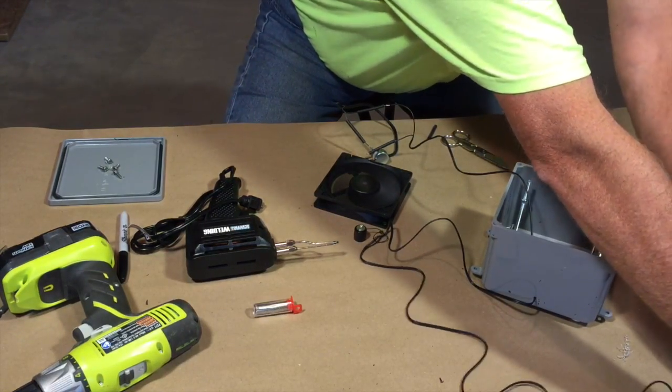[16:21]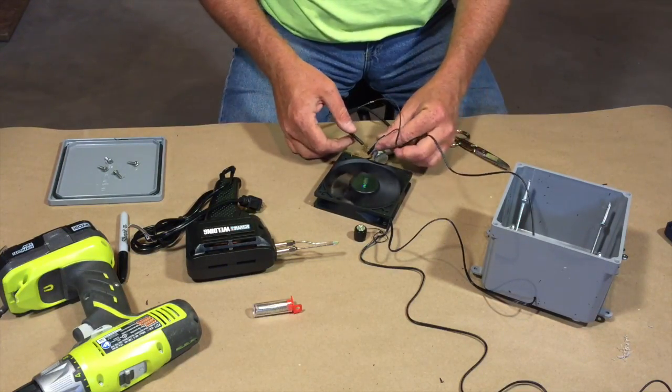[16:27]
We're going to take the power off of this one. We're going to go to there. Then we're going to take power. Okay, so we're going to put that back together. I'm going to plug it back in again. Make sure it speeds up. Make sure it slows down, which I can see by the fan. I don't know if you can see it in the video or not. So now we're going to solder all this up.
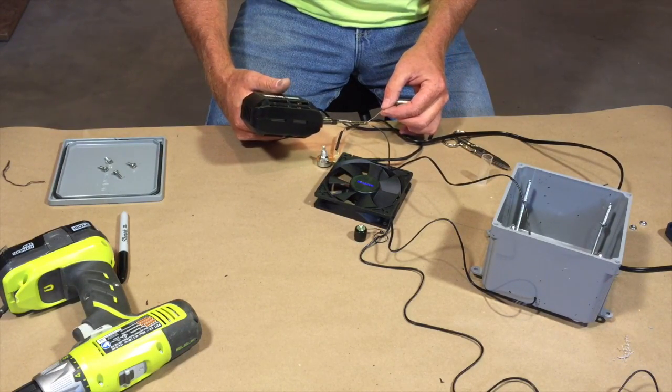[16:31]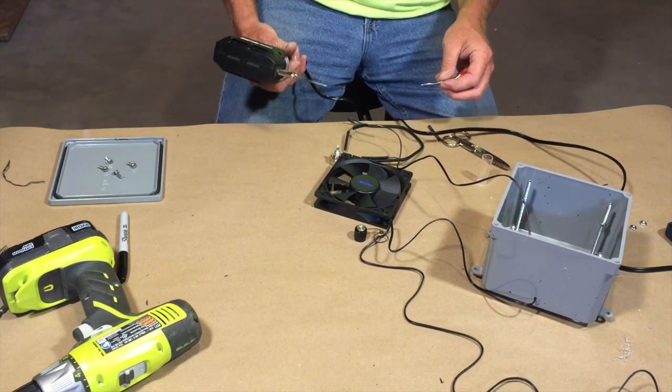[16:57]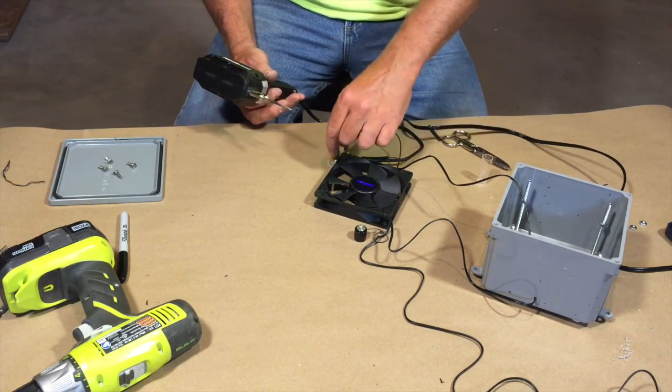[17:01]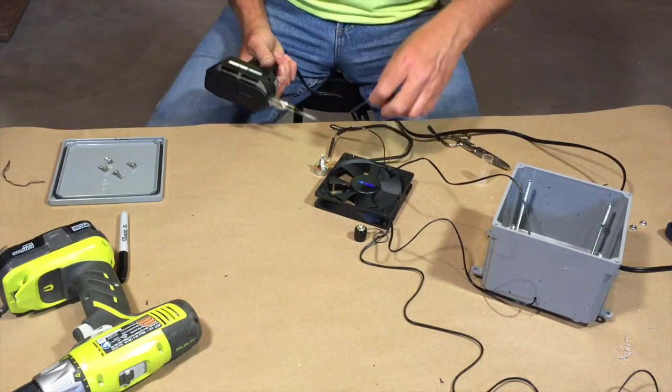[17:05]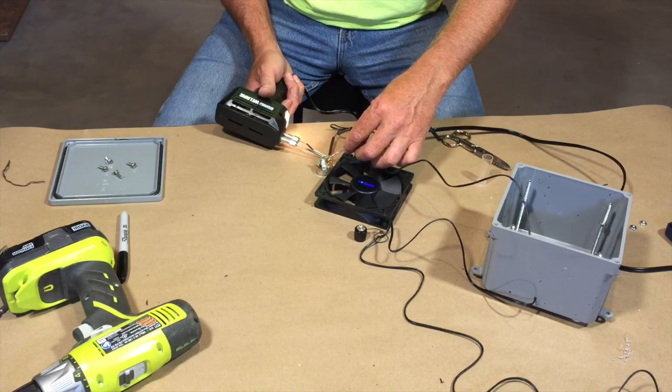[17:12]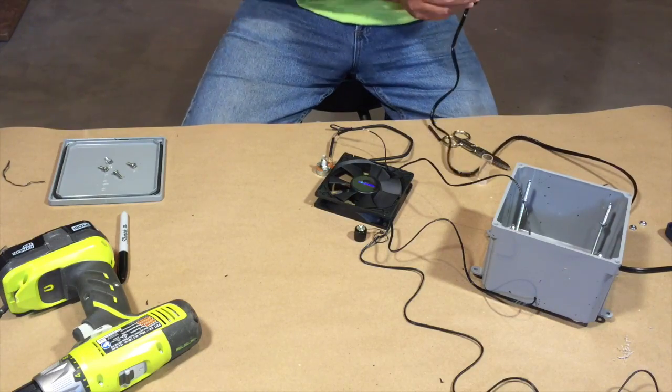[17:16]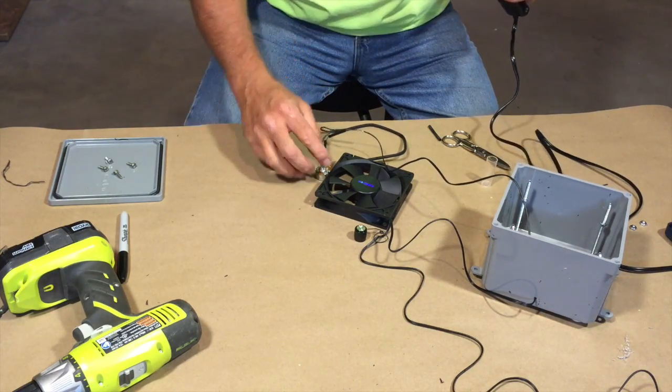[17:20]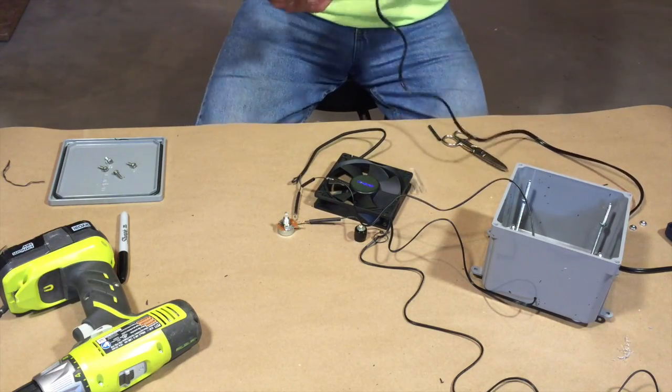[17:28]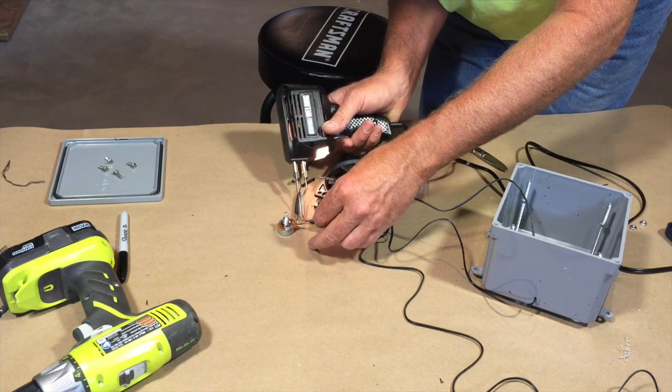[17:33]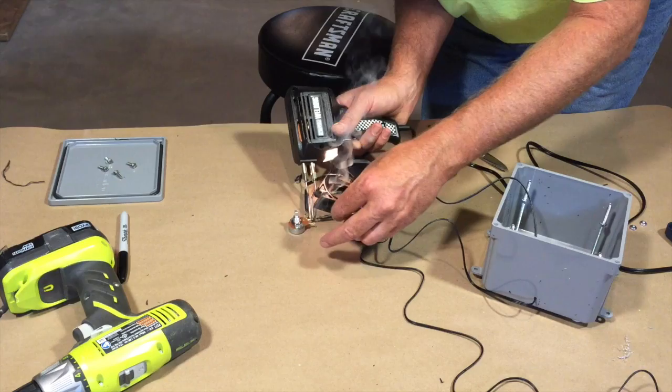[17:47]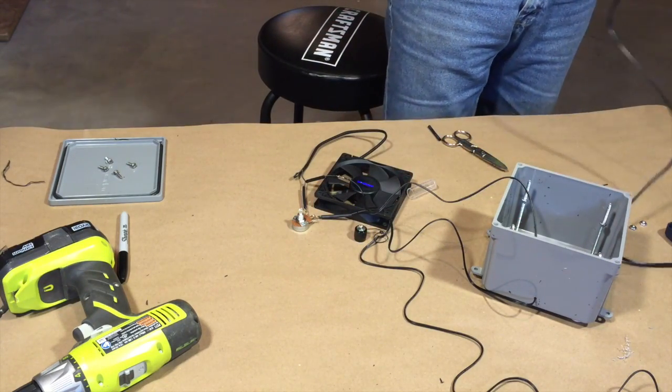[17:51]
And as I choke myself with the fumes, try not to leave that on there too long. A little more solder. Shake a little bit. I should probably add another beer. And that's it for the soldering.
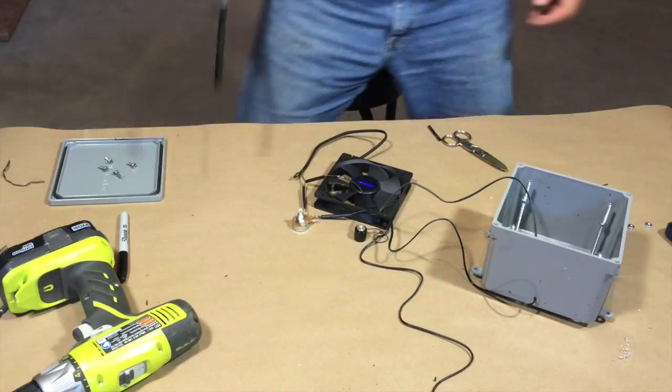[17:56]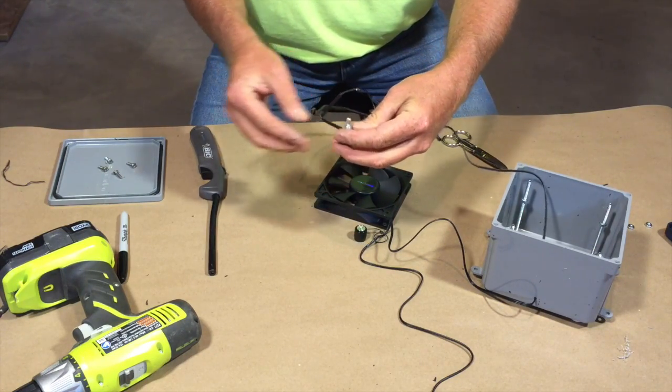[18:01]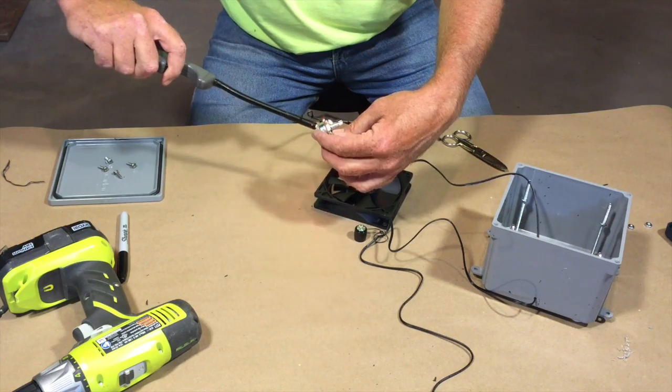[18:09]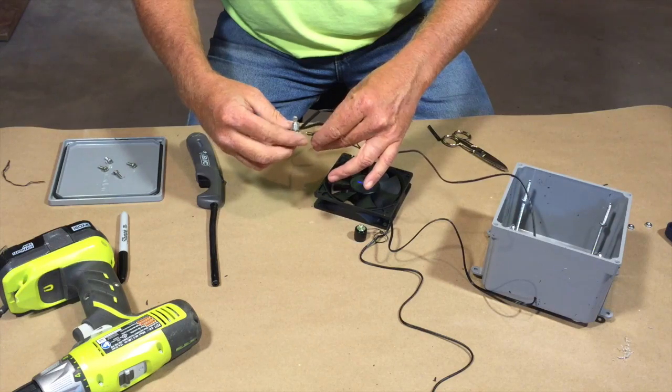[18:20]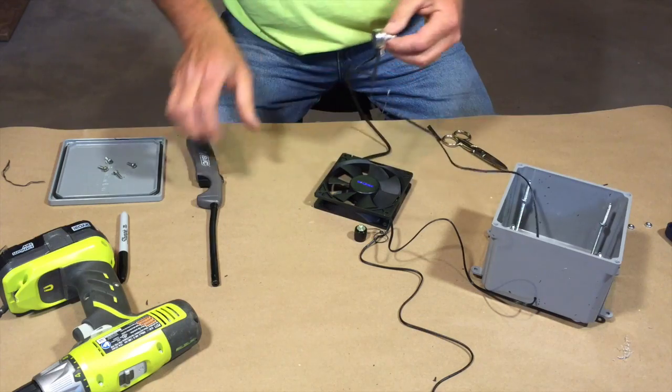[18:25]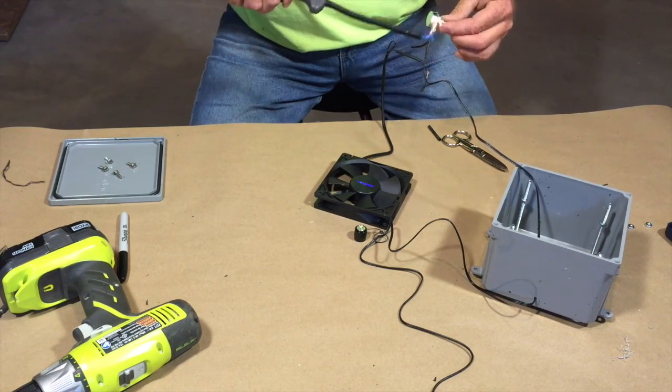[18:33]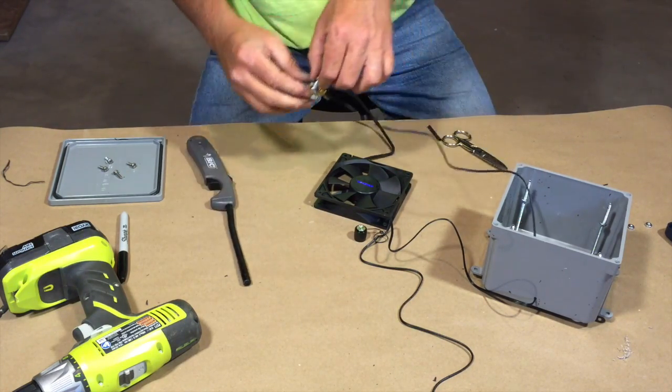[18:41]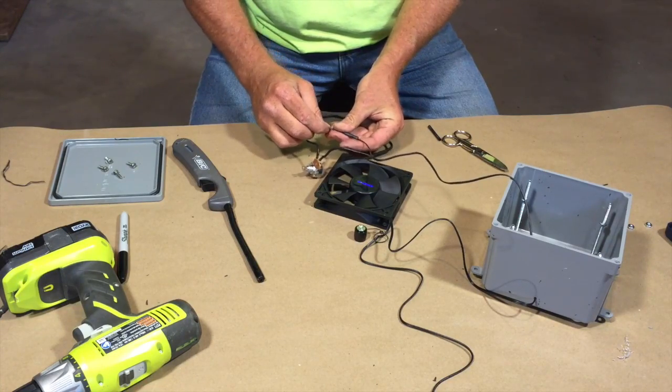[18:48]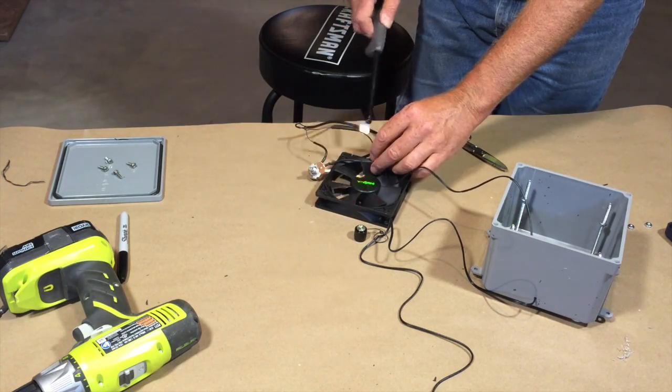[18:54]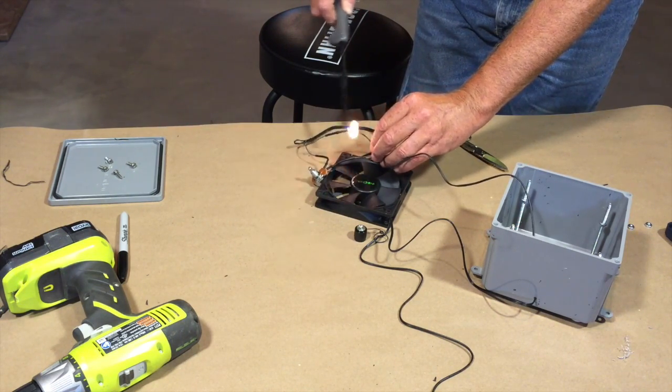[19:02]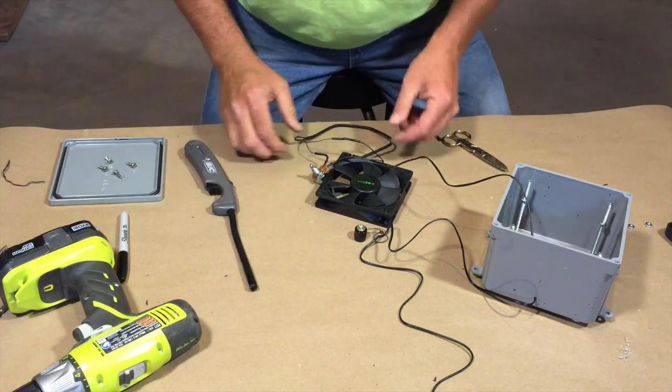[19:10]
Okay, so we'll slide the heat shrink up. Get a little shrinkage going on there. And the other one also. Put that up on that center contact. We have one more connection to cover, which is the ground. And that's that.
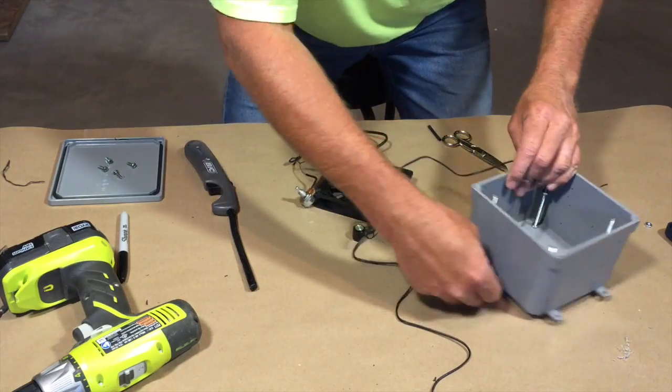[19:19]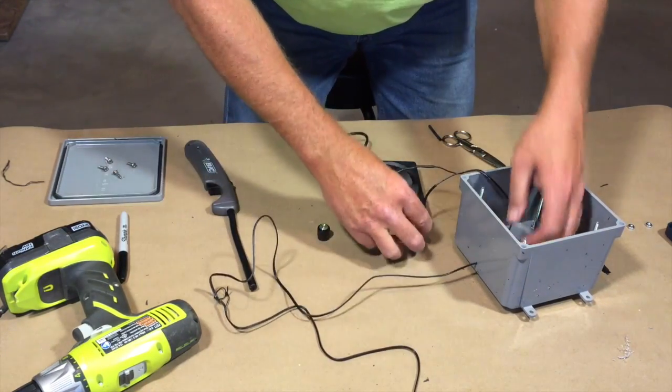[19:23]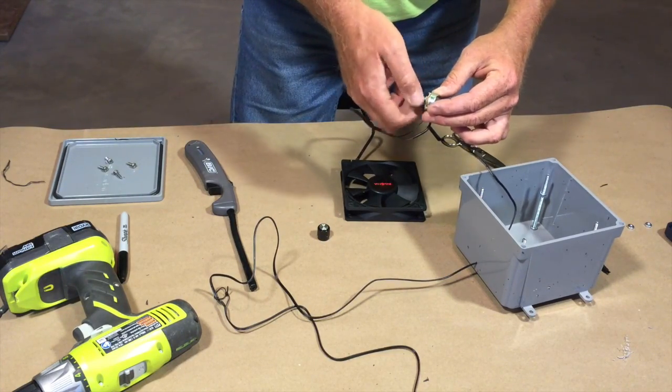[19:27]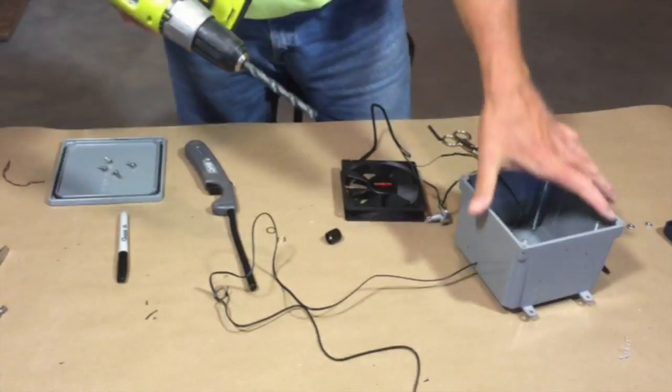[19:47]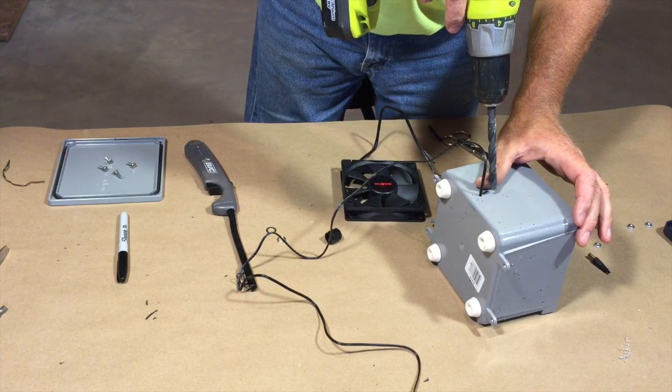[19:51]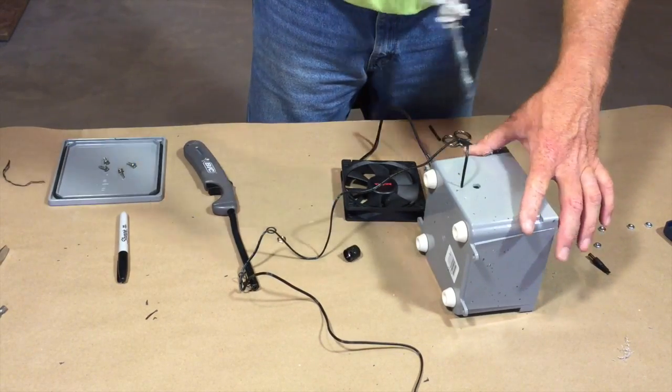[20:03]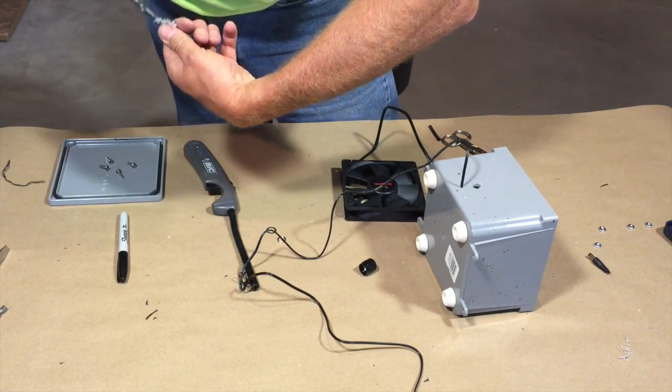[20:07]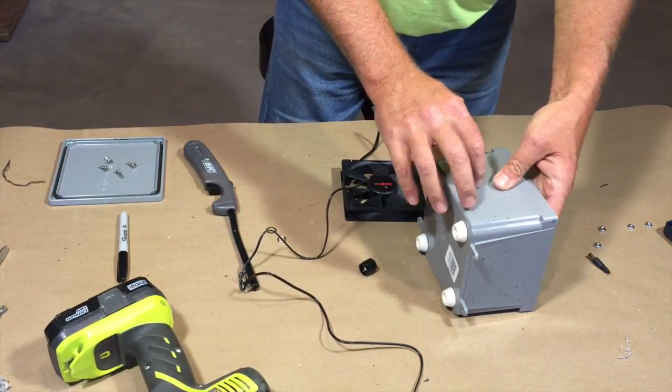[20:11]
So I got the wire going into the case. You want to drill a hole for the rheostat. And I think I'm going to put this rheostat right above the power. I want to make sure it's below where the fan's going to sit.
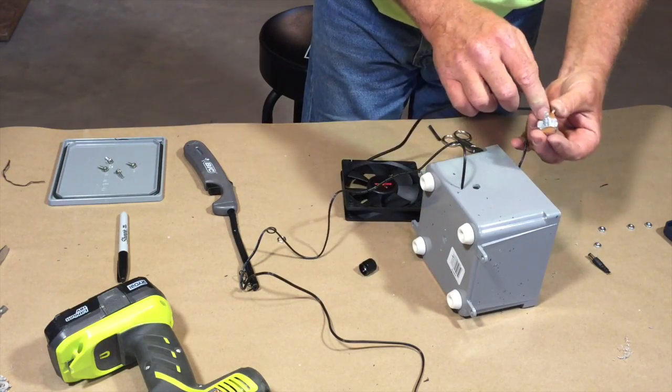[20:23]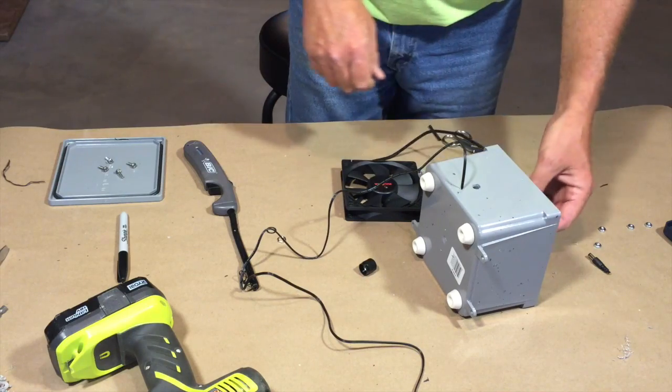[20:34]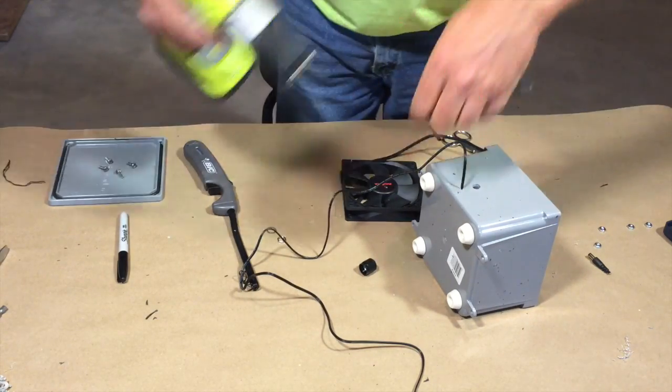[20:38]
So we'll put that into there. Rheostat will come back through there. Now this rheostat has a little indentation for justifying up and down. It also helps when you turn it further than the stop, it helps it stop. So we're going to mark that and put a hole on it also.
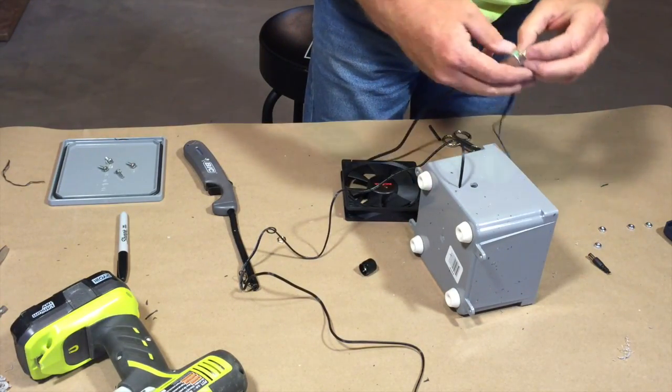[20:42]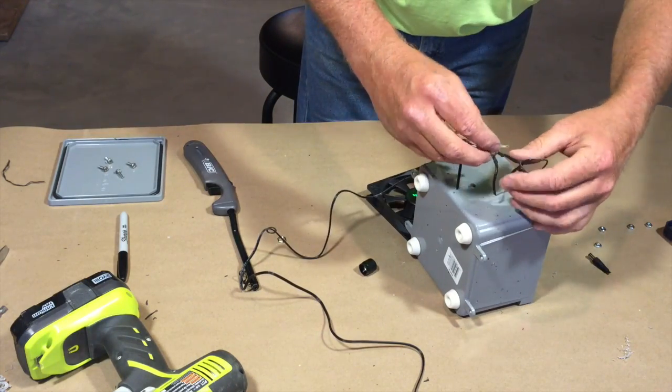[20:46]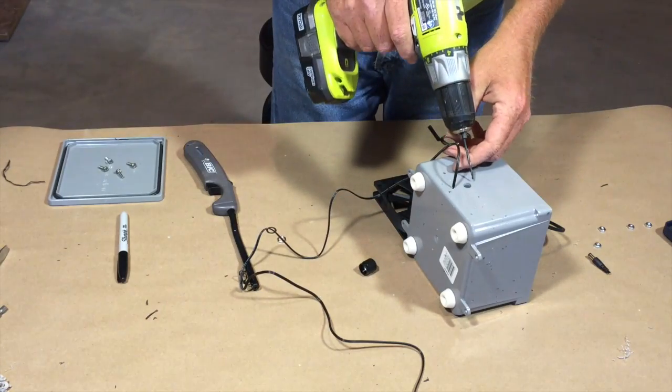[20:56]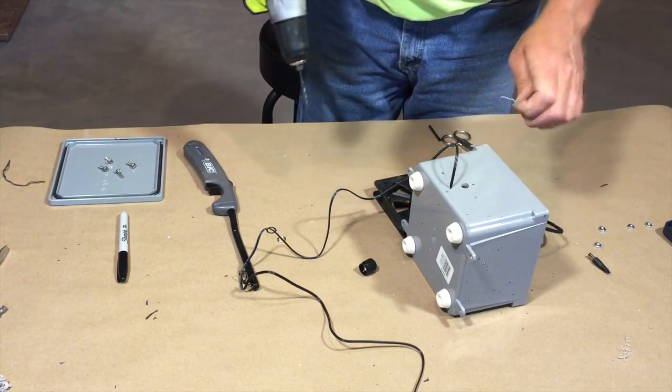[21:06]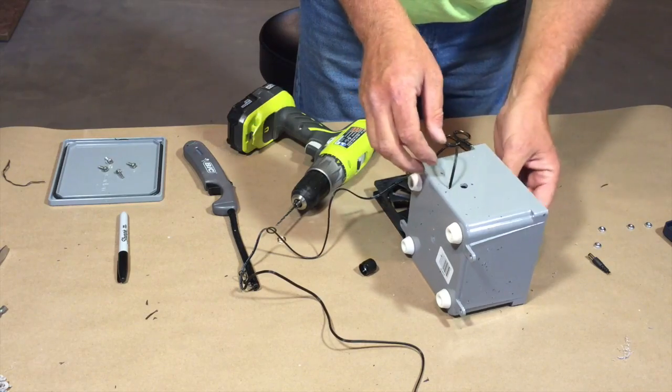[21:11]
So where we scratched on the case, put a little hole there. When we put that rheostat in there, the rheostat goes up, and the little indentation will then go through there. So even if you've got arms like gorillas, you're not going to be able to turn that past the stop without breaking that rheostat. Now we're almost done. So I'll put that in there, get that sealed up.
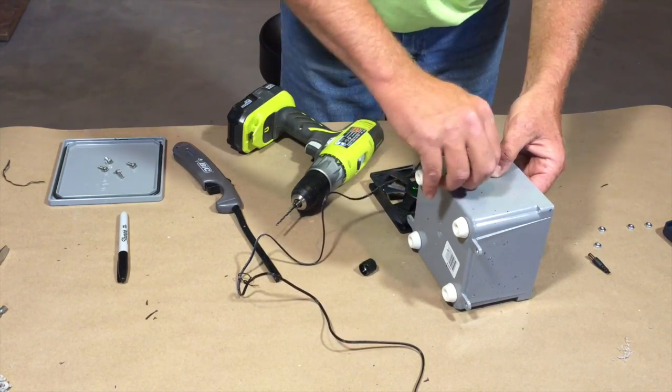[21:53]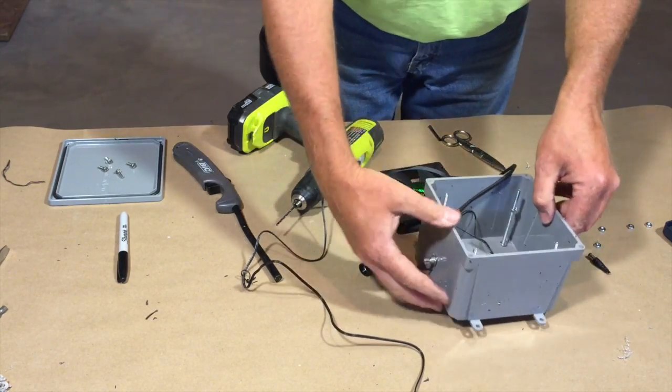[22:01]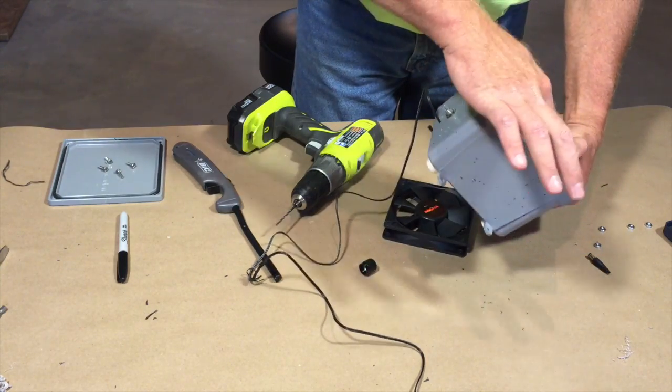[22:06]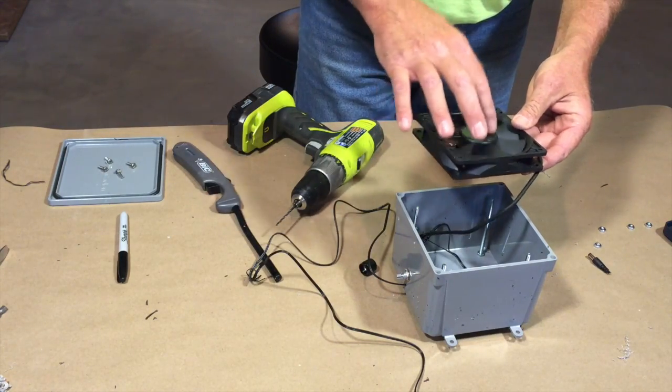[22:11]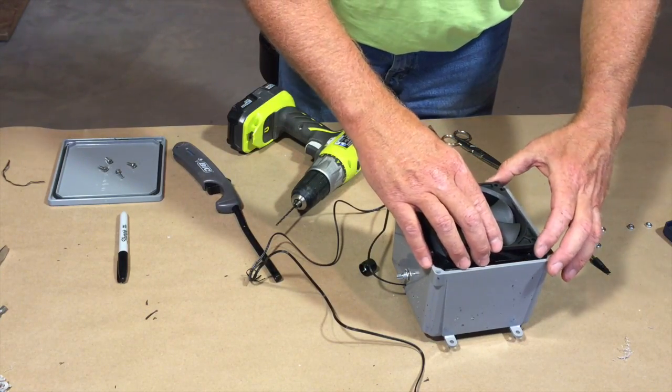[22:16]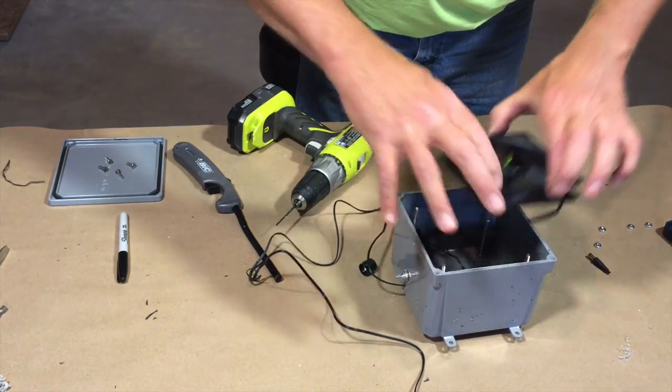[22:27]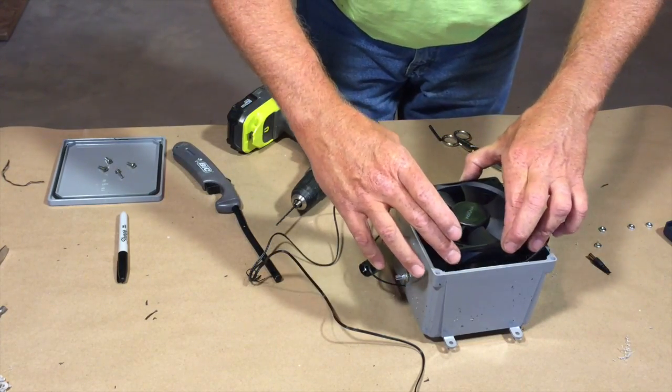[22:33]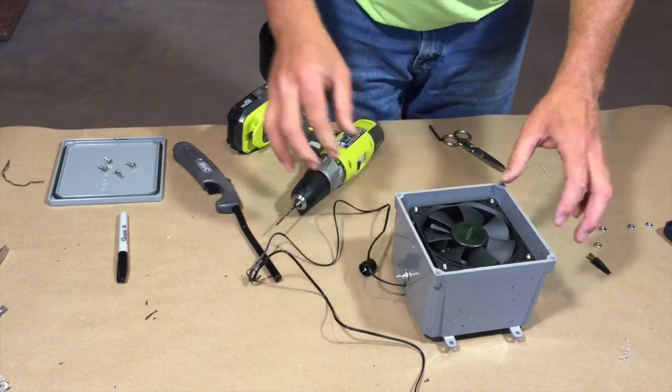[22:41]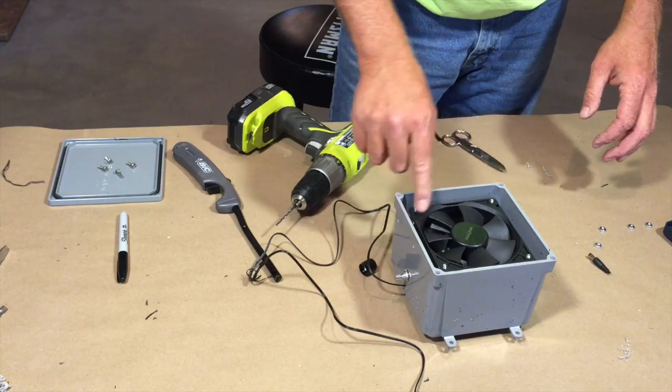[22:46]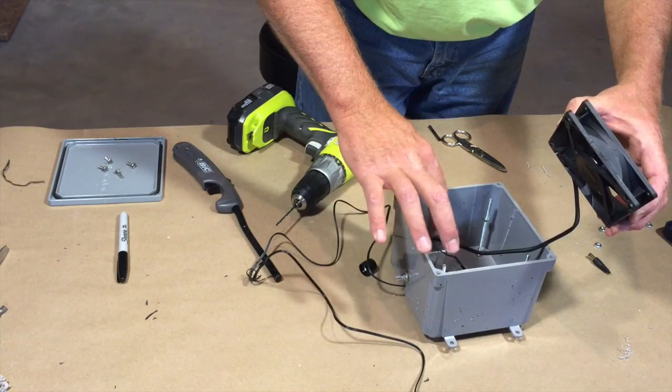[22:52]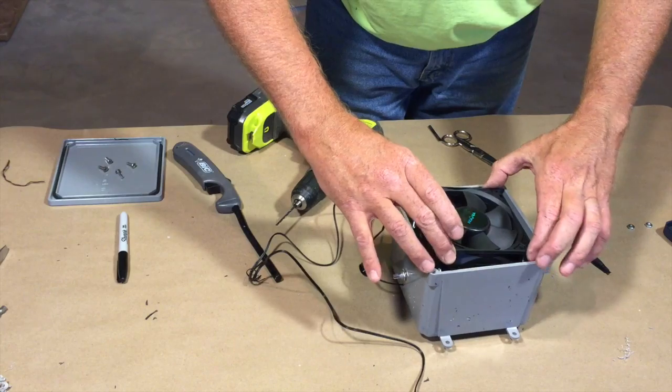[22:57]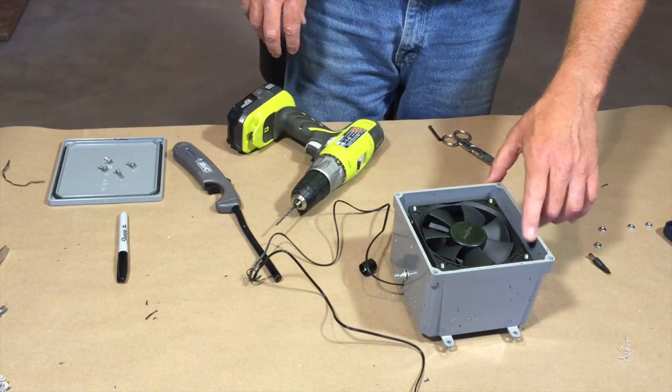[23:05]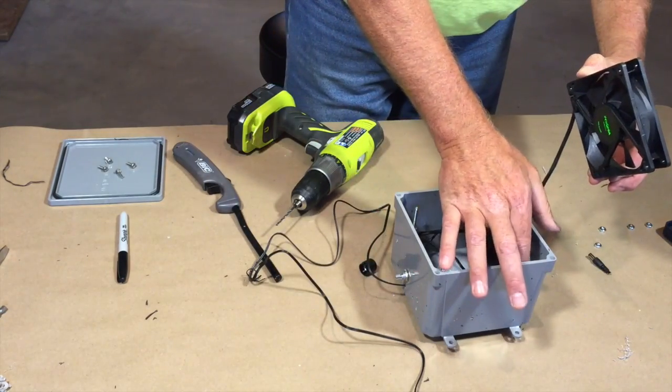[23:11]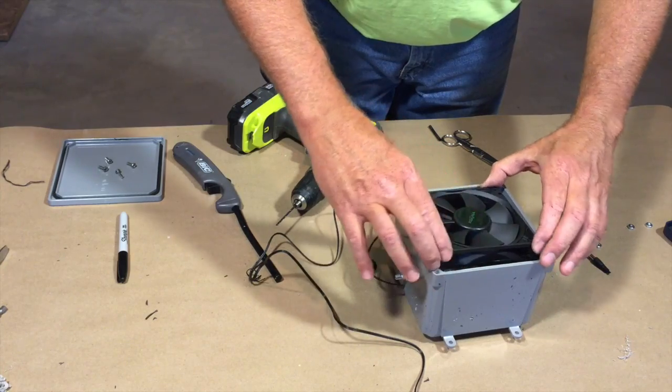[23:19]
Okay, now you can see how the rheostat is below all the nuts in there. You want the spinny side of the fan up, because that's where you're going to apply the glue with the rare earth magnets. Set that down in there. It looks like I may have turned two of these. So you just got to come up just a little bit. Put that back in. Actually, I want that one and that one to come up. And that one still has to come back up again. Did it willy-nilly there. Actually, that's not too bad.
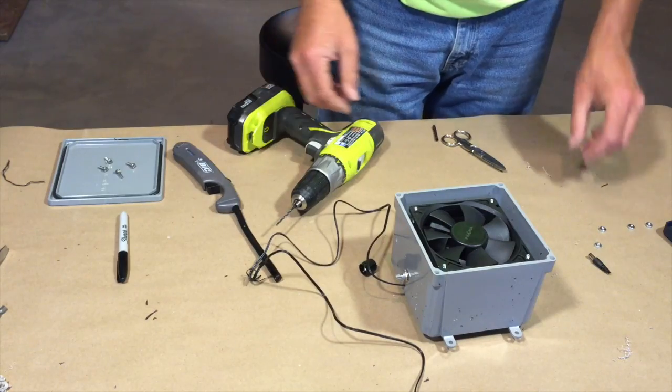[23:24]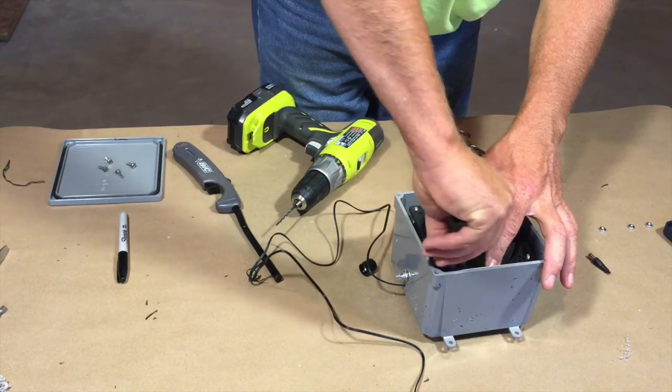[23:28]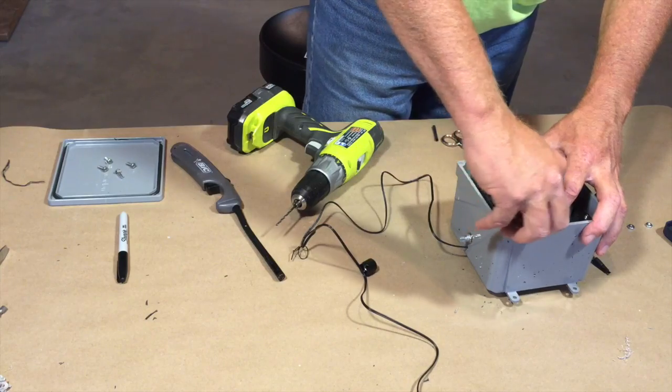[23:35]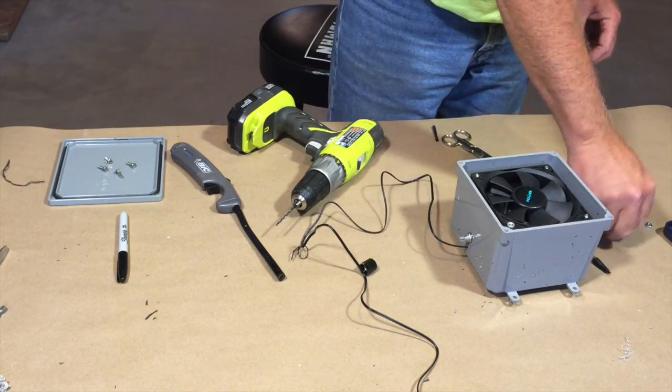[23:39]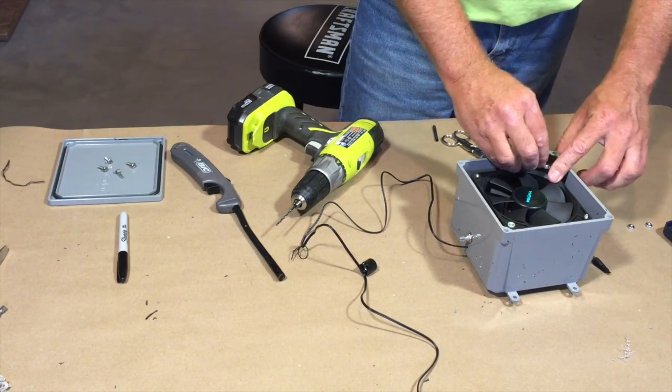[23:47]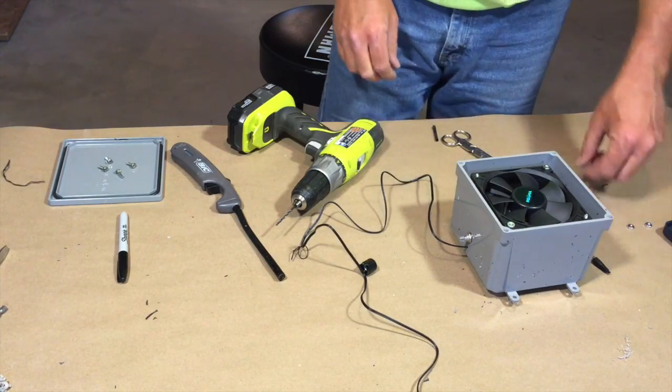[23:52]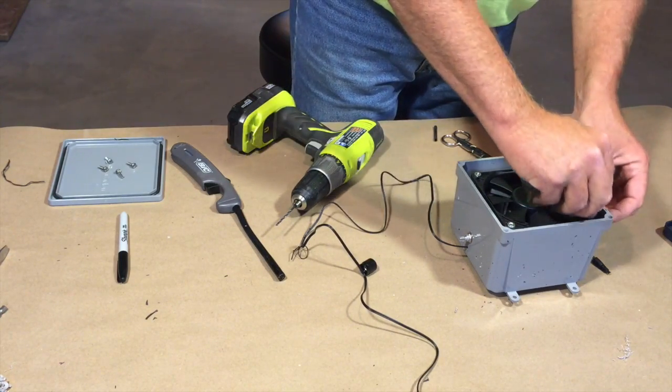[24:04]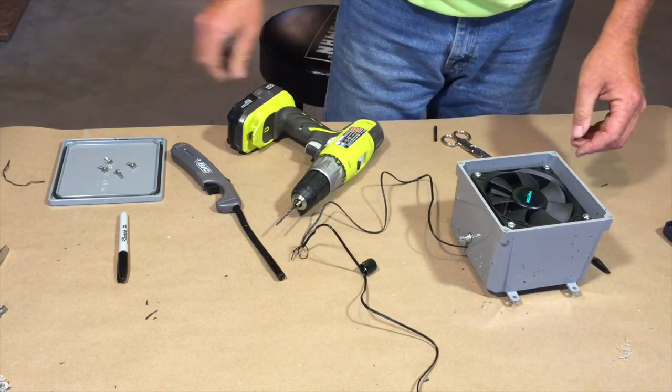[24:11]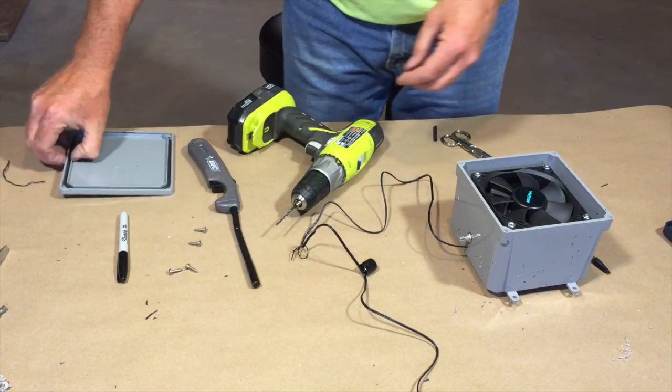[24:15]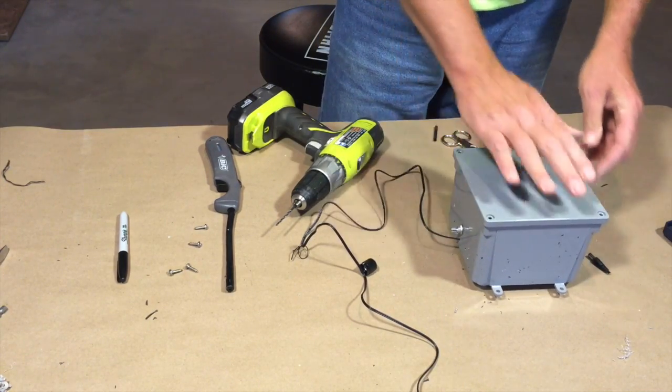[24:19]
So now we put our 4 nuts on top. Don't drop it inside. And if we find that this doesn't spin the stirrer inside the jar, then I will take it apart, replace the screws with a screw that's a little bit longer, to get this fan up closer to the lid. So right now this fan's just got to sit on top like that. The Erlenmeyer flask is going to sit on top of there.
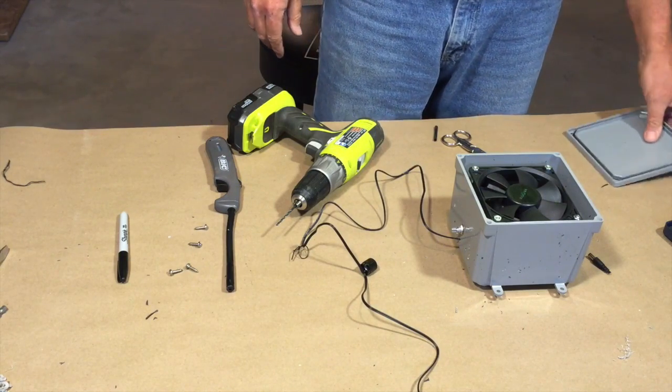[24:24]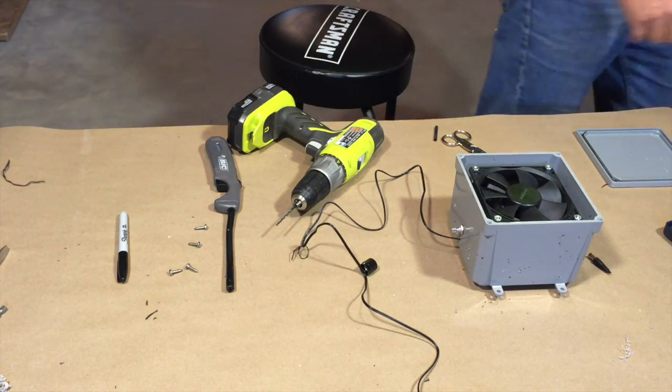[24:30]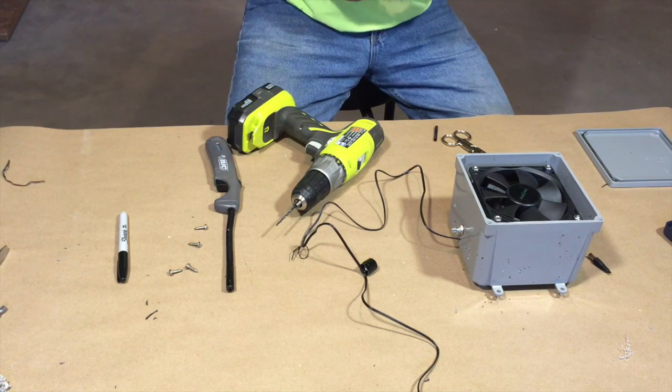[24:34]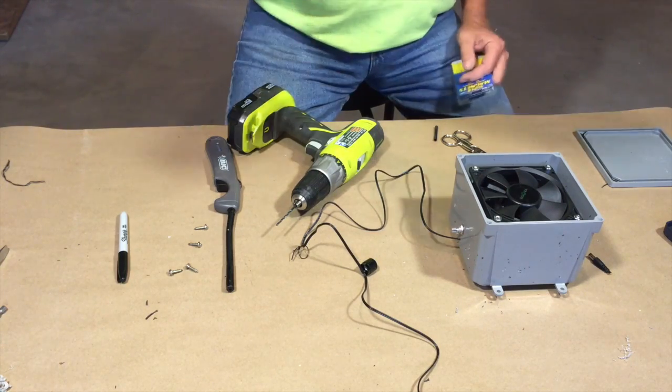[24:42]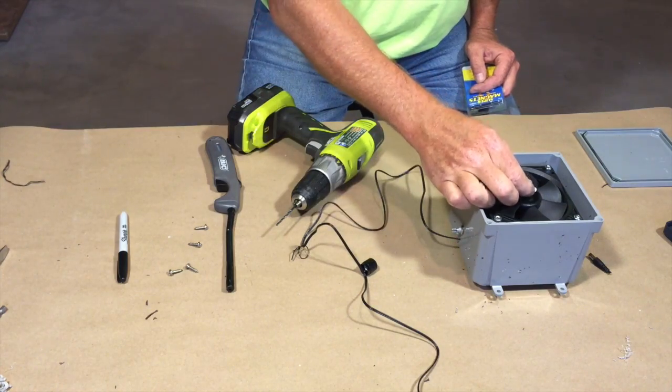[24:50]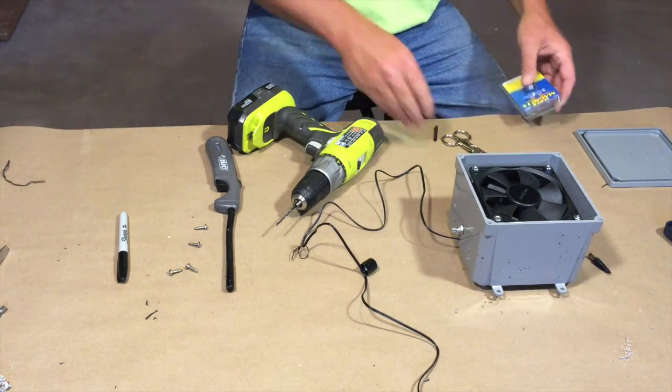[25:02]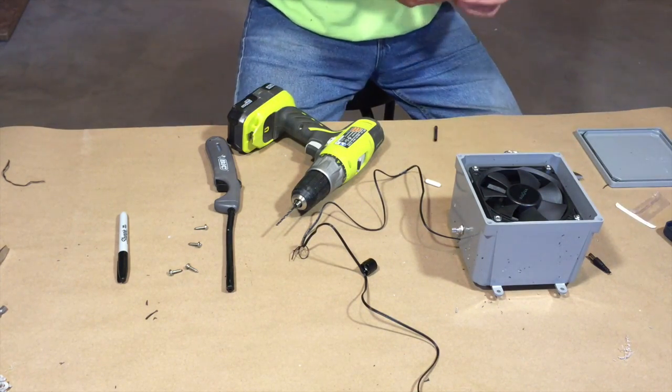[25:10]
So let me go get my award-winning stir bar and show you how we're going to do that. Stir bars come from the store. Now when you're ordering them online, they come in different sizes. This one right here is a 25mm stir bar. That is barely big enough for what I want. I'm probably going to go with a 50mm, but unfortunately the picture online looked about the right size. So we'll see how this works.
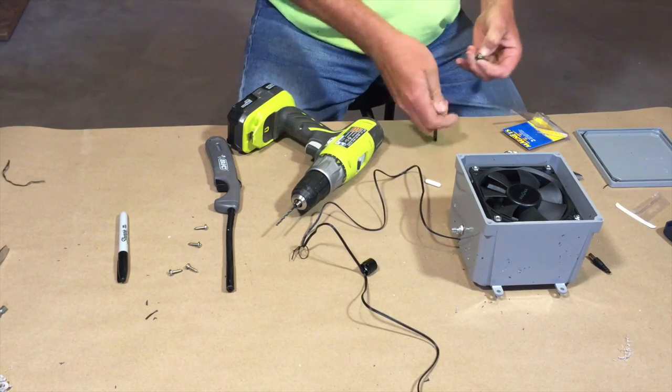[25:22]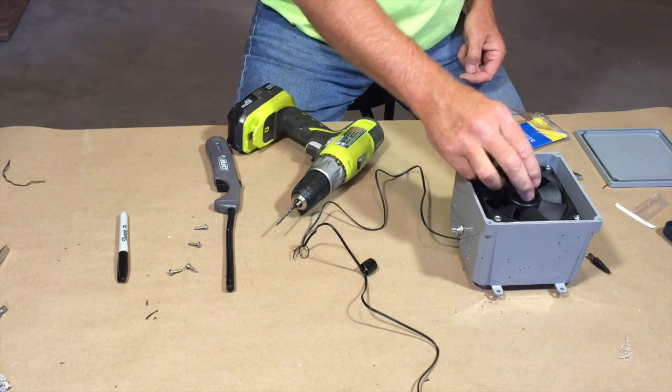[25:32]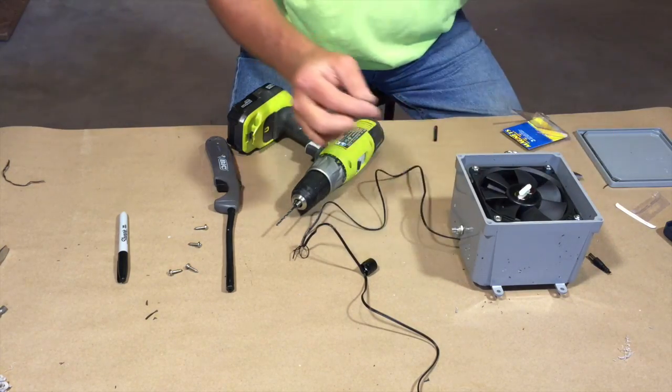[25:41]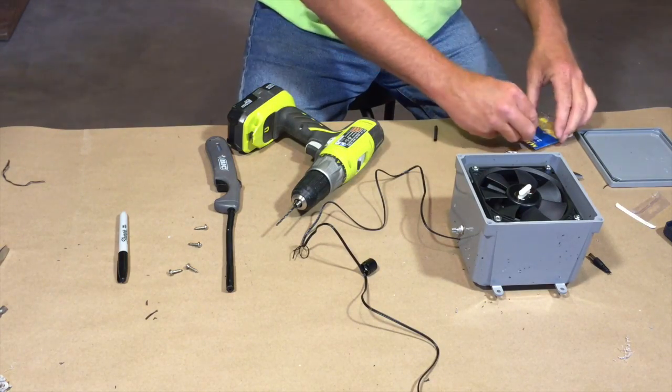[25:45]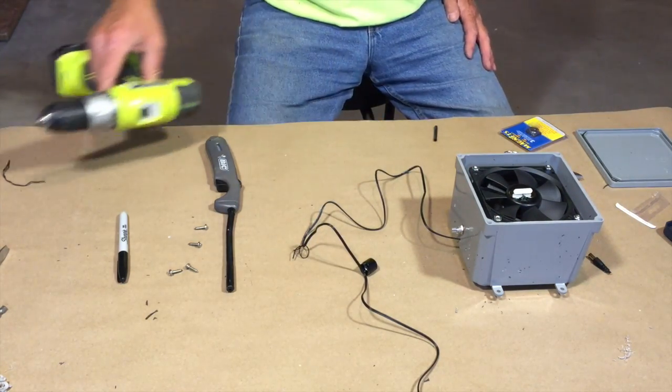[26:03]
Maybe the rare earth magnets, as strong as they are, will be able to provide some serious magnetic attraction. Oh, those are hard to pull off. Okay, two magnets. Magnets are going to sit on top of the fan. We'll hot glue those into place. Then the stir bar will go inside the Erlenmeyer flask. And hopefully it'll be strong enough to spin it. Otherwise I'll have to buy some bigger screws. Now let me go get a hot glue gun and I'll be right back.
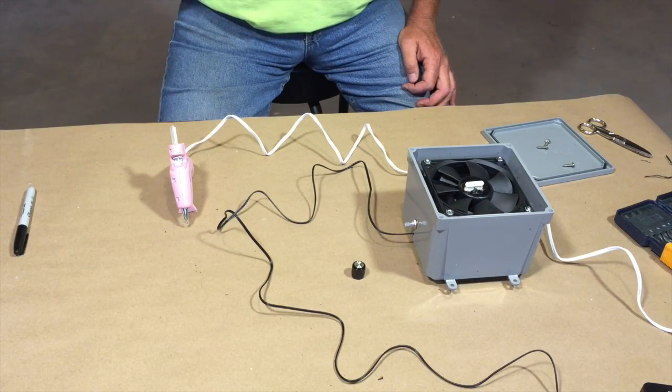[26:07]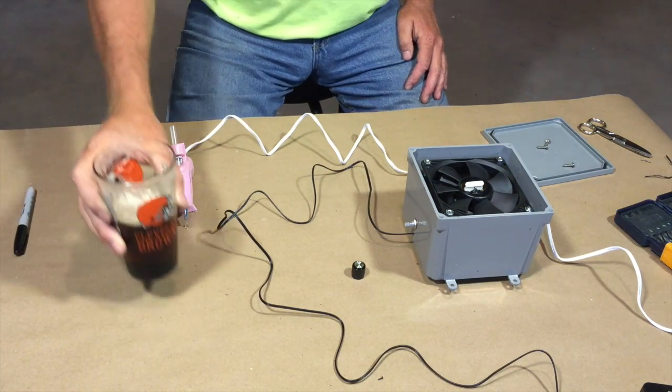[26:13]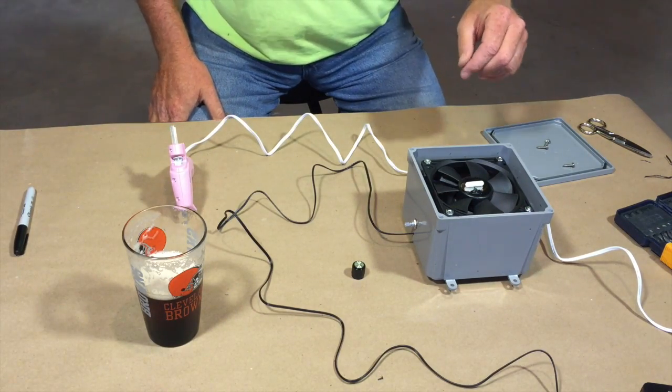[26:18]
Drinking Irish right out of a Cleveland Browns glass. So let's finish this up. Always got to have a home brew to work on projects.
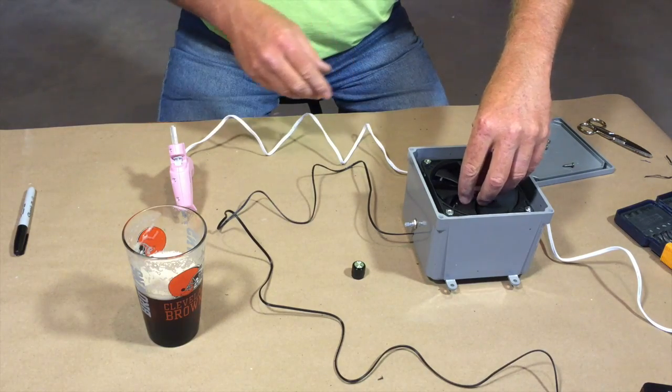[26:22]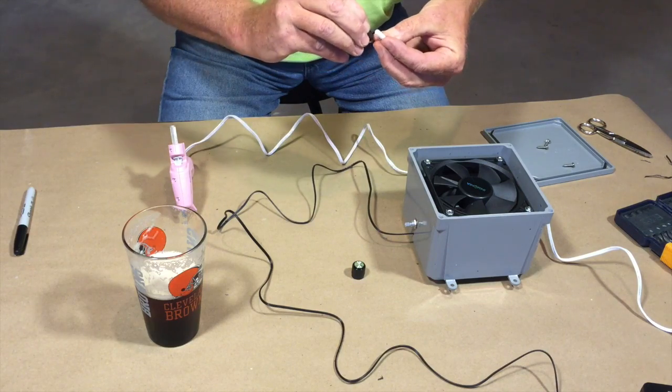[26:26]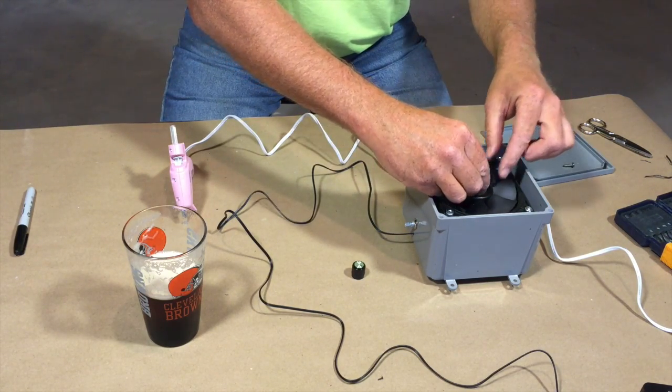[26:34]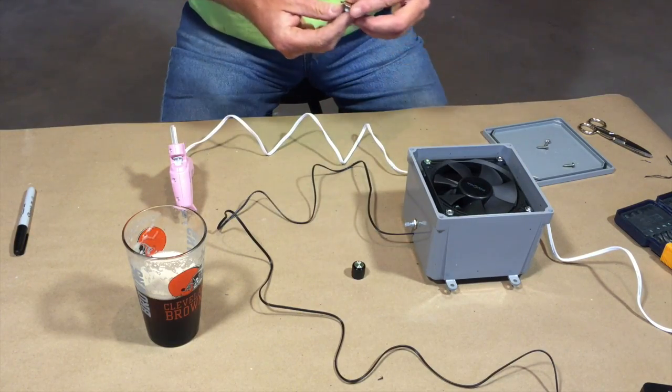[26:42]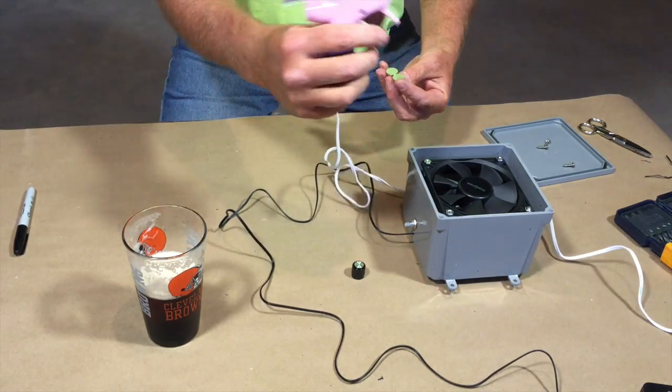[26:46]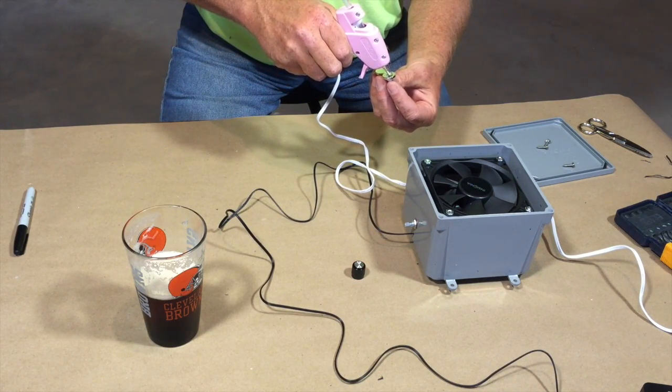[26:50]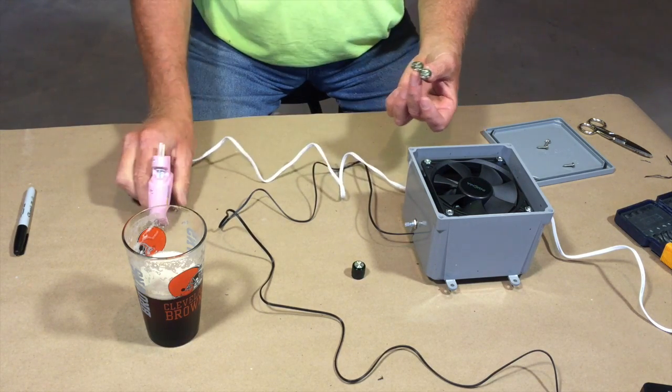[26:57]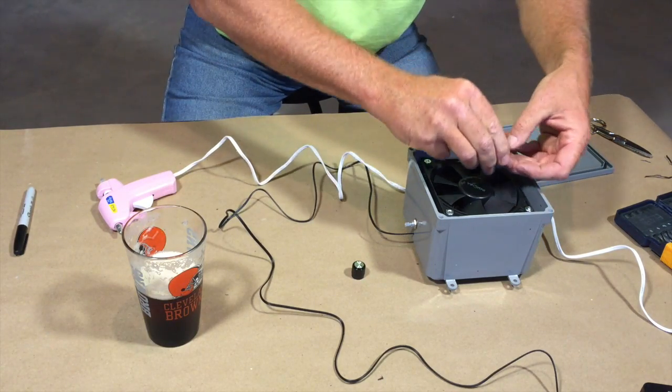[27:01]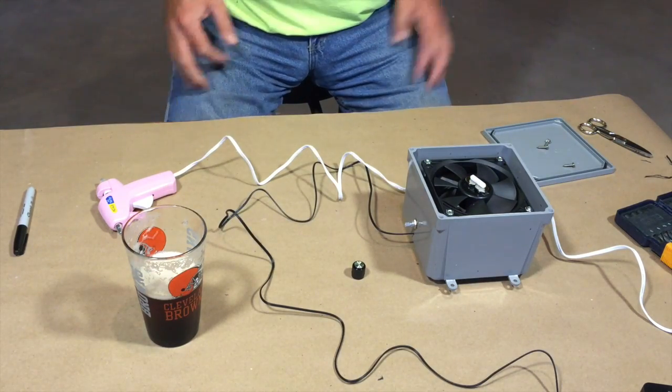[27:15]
So here we go. We got the correct polarity. If I put this like this, it kind of repels it. So I want to make sure these are the right polarity and everything is good. This will sit on here. So we will get some hot glue on the back of this. Borrowed my wife's nice pink hot glue gun. So we'll put some glue on both sides of that. And that is really hot. Don't stick your fingers in it. And that's on there.
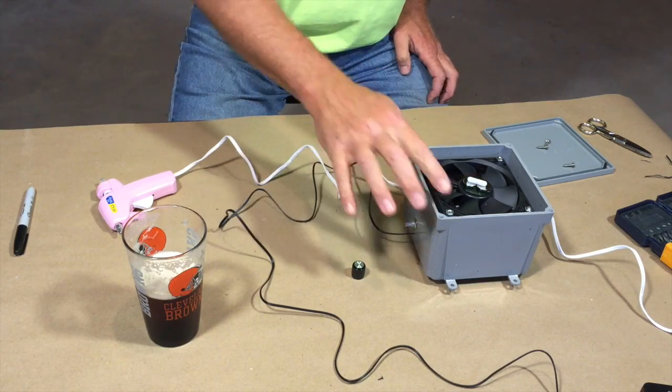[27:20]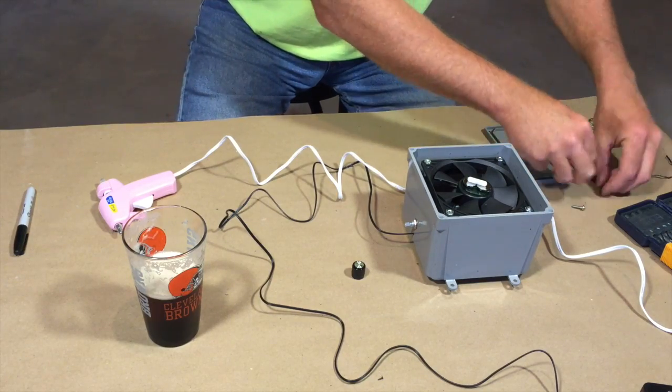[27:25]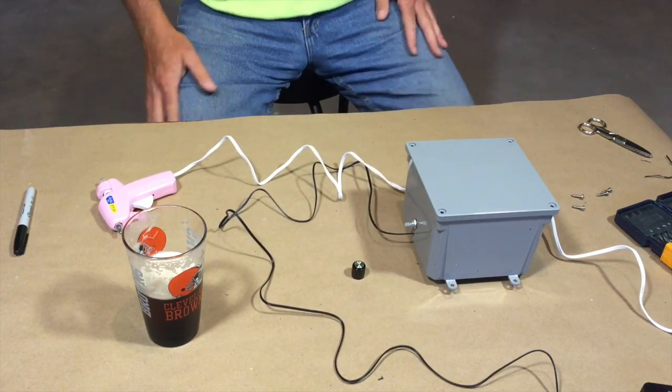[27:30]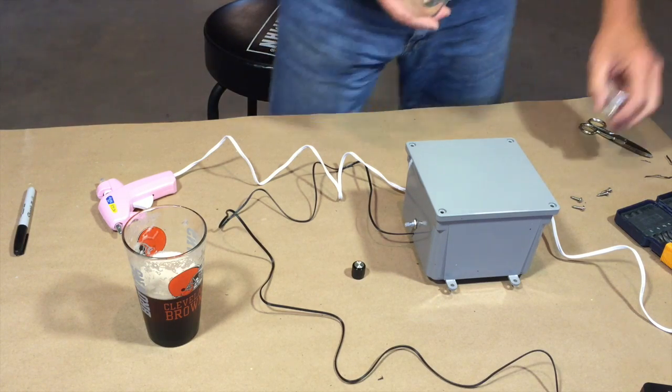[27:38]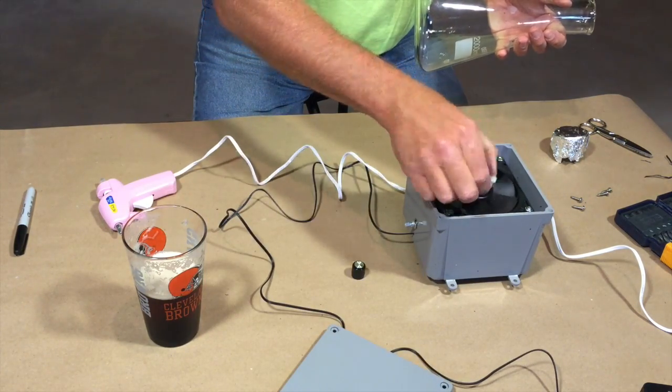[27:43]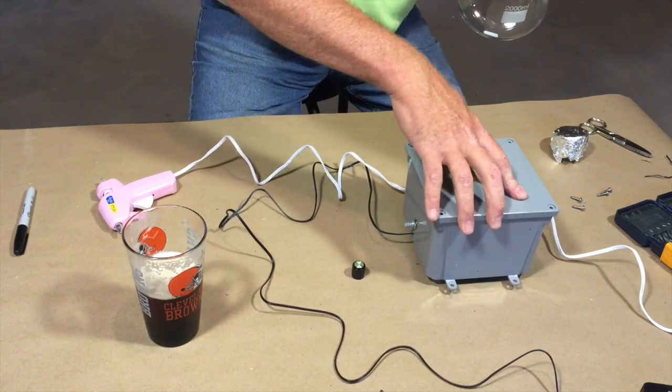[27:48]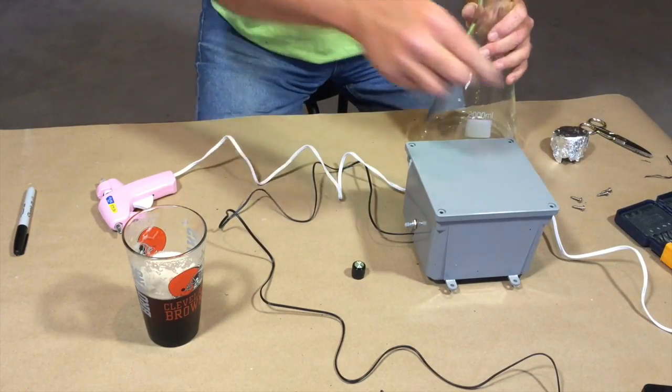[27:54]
So I'm not sure if this is going to be tall enough right now because the whole fan is sitting down pretty far below the lid. Only one way to find out. Go ahead and put the lid back on. We'll get our flask. Wait a minute, I need a stir bar. Take a stir bar, drop it in the glass, put the lid back on, unplug our nice pink glue gun.
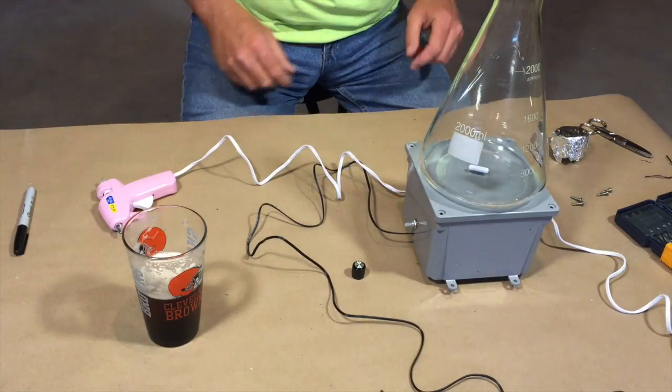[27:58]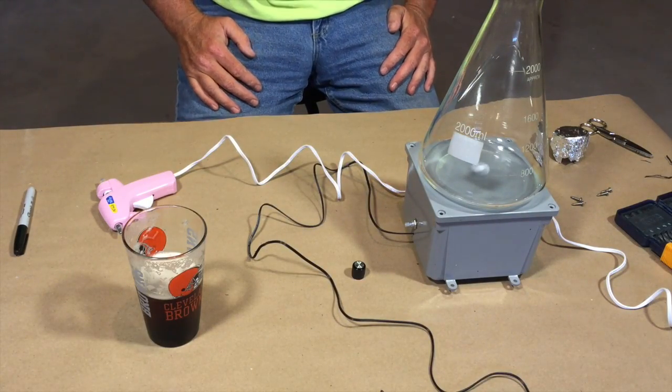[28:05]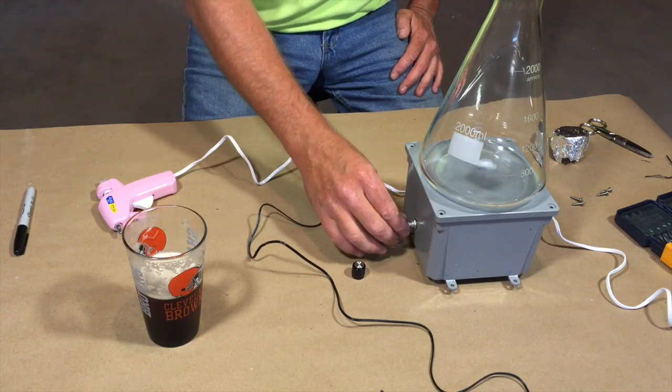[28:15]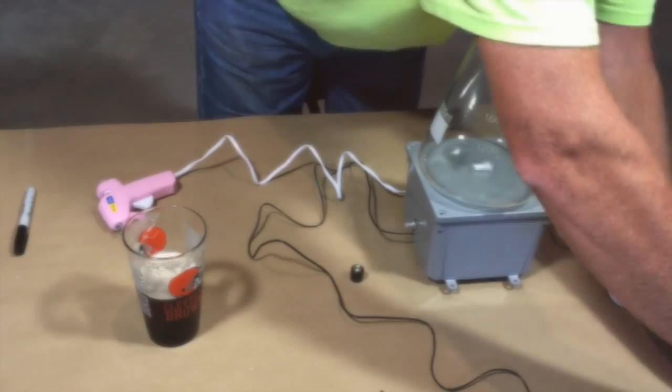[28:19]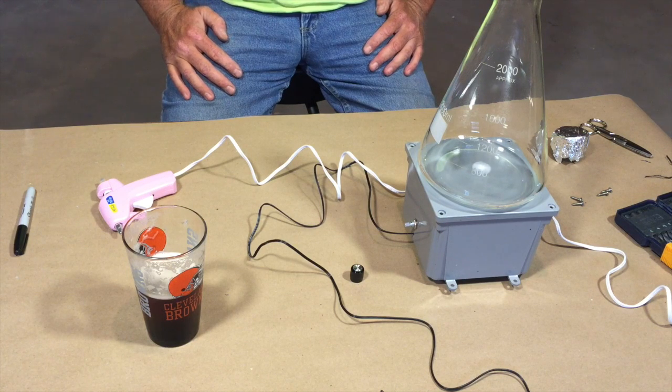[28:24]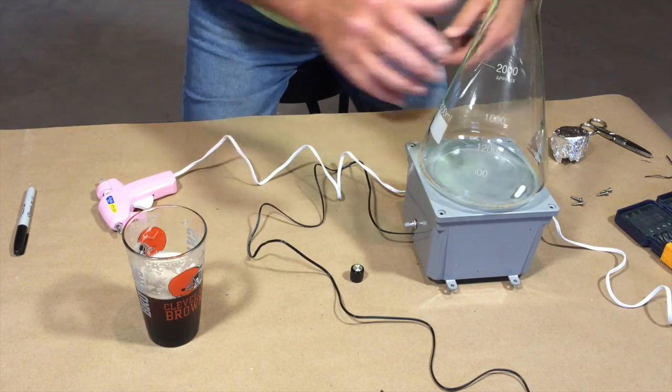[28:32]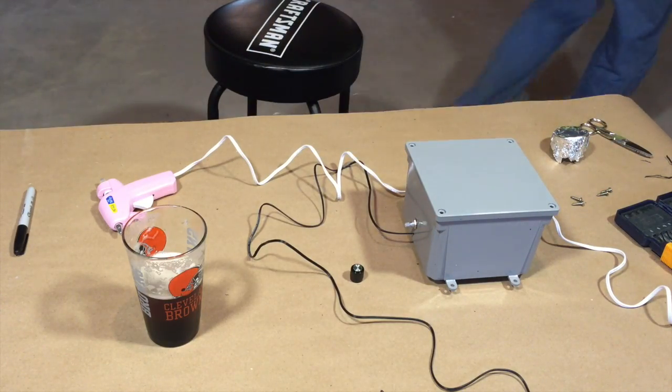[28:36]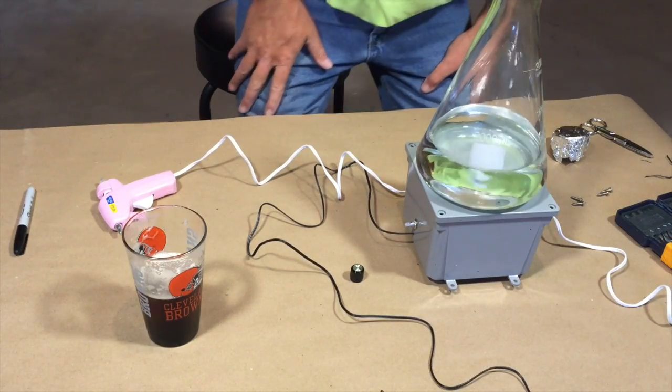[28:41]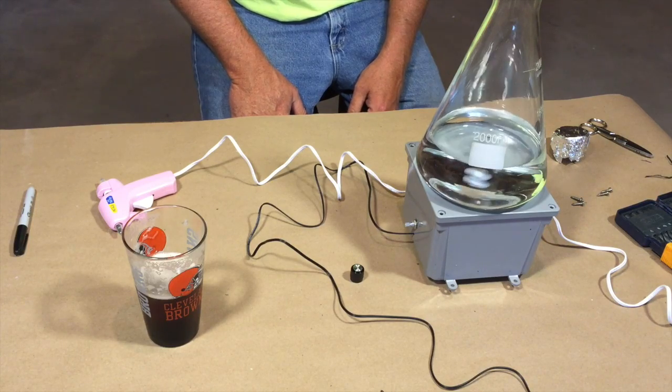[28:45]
Okay, that is way too small for this flask. But it looks like it's doing some funky spinning thing. Because I think at slow speed that might be okay. But unfortunately it flips off. So let's get some water in the flask, see if it does anything different with water in there. Okay, that's slow speed. And we got a vortex.
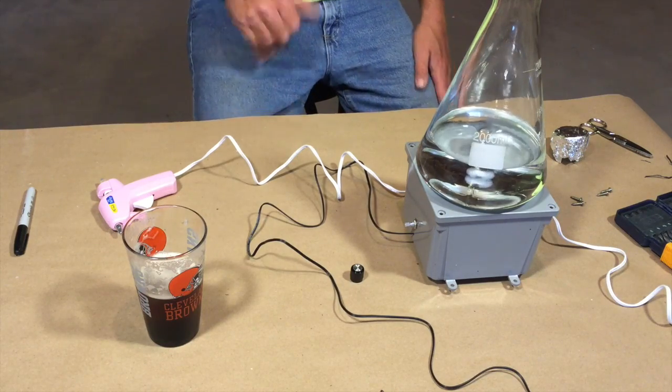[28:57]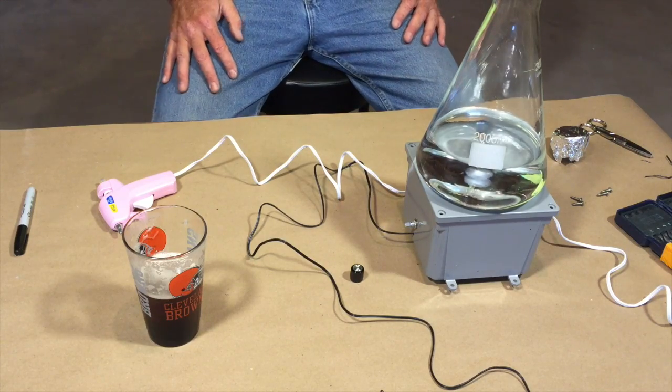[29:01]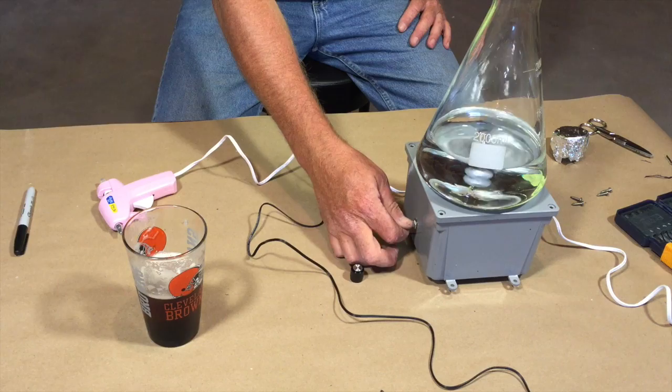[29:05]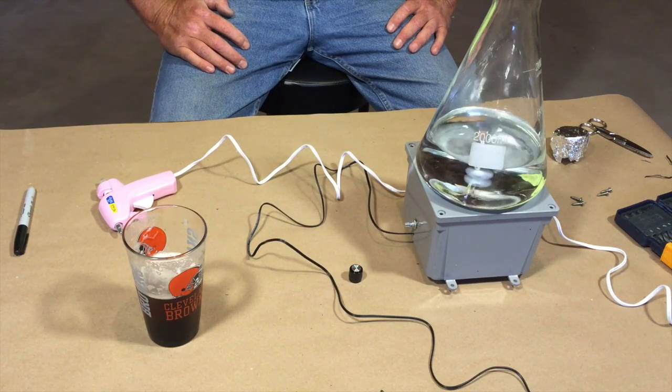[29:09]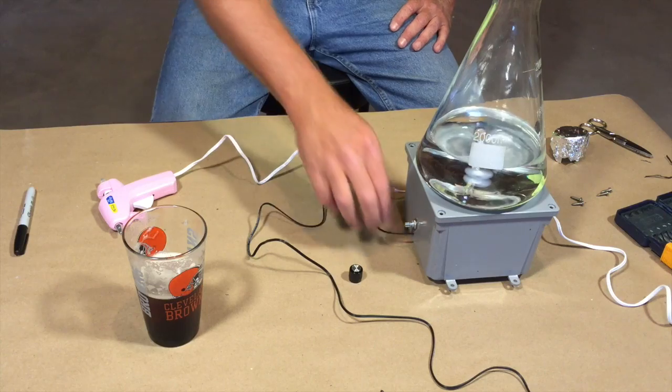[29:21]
So maybe that's on high speed. Maybe the water is just what we need. Because that is one heck of a good vortex there. Slow that back down to slow.